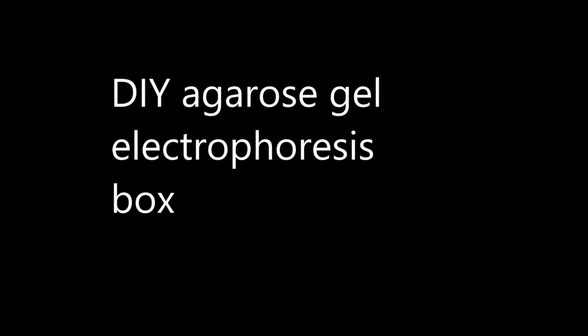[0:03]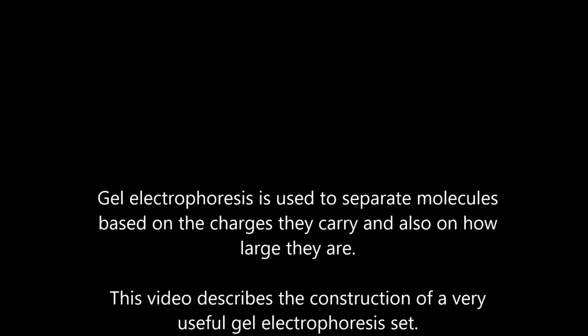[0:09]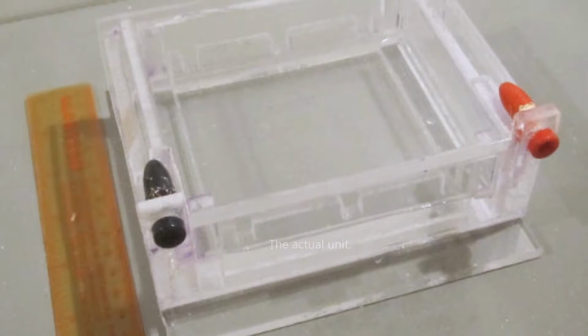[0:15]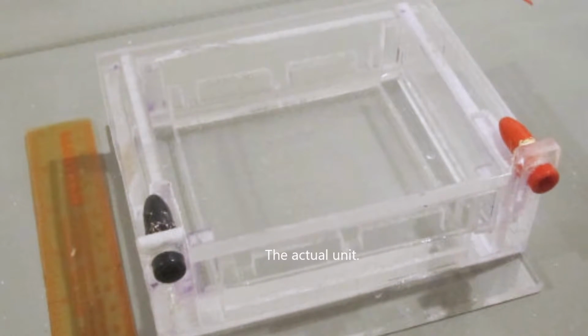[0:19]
Hi, this is a short video on how to make your own gel electrophoresis unit. Gel electrophoresis, as some of you know, is pretty useful for separating molecules based on charge: DNA, RNA, proteins, used a lot. So I'm going to describe the different steps to make your own. This is the unit I made, pretty close to professional quality, so I'm genuinely happy at how it turned out.
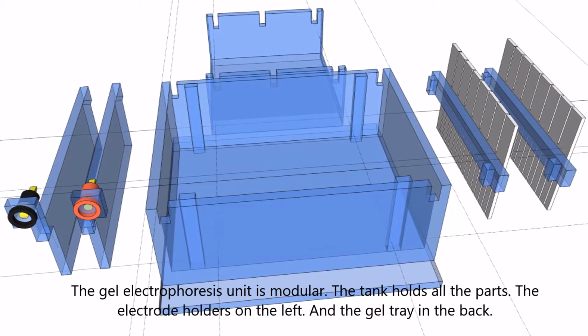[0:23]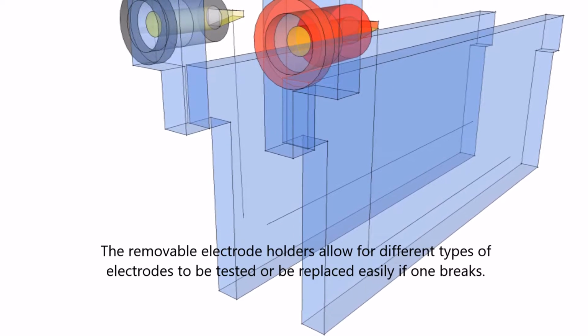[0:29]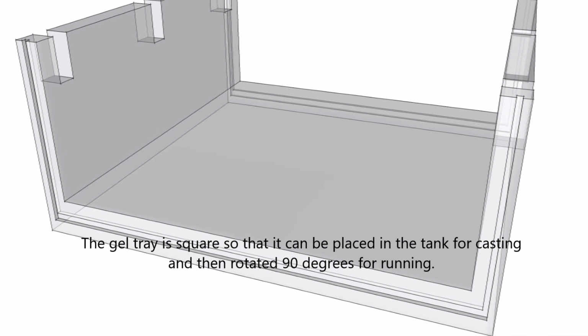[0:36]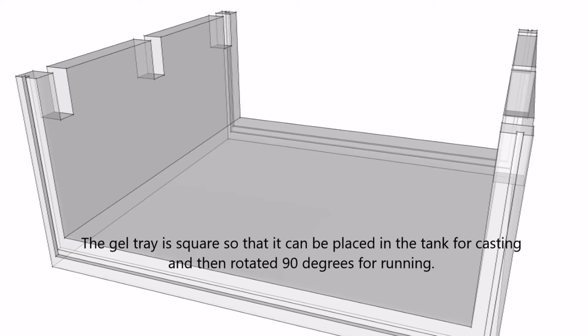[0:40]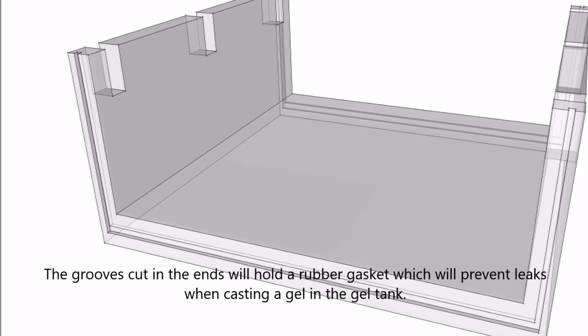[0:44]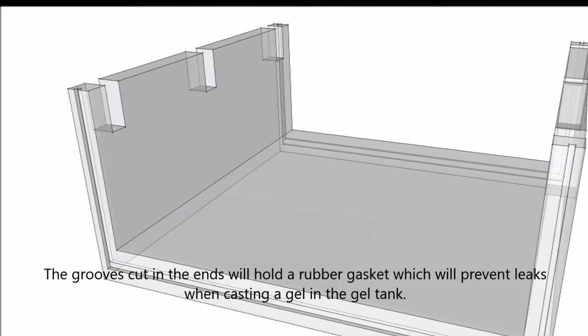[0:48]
In SketchUp, I drew the parts, starting from the right: gel combs, then in the middle is the tank, and on the left are the electrode holders. The electrode holders are like plastic plates, removable ones, so you can change the electrodes if you have a shortage of some materials. The gel tray is where the gel will be held, through which the molecules will pass under current. You can see grooves cut in the end, so that'll hold a gasket, and the gel tray fits both ways inside the holder, so you can cast your gel.
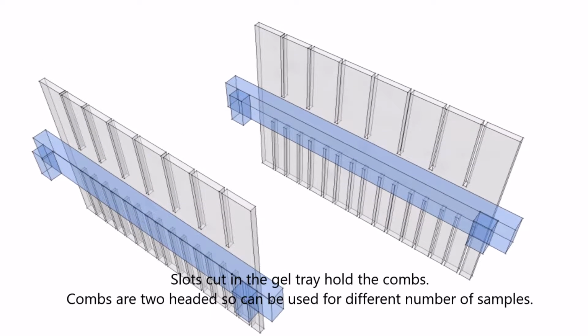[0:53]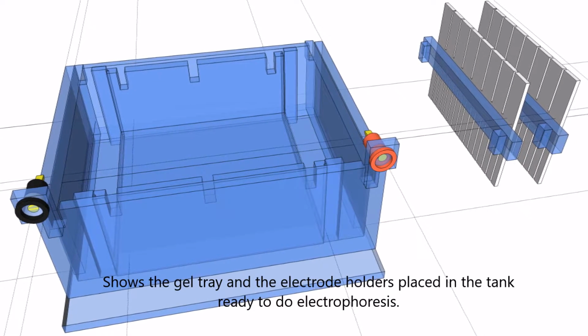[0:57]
When you cast your gel, you put combs inside, so these are two-headed combs. You can have different sample sizes. Here is the assembly with the gel tray and the electrode holders, and you'd be filling it with buffer and running it. So let's start with the gel tray.
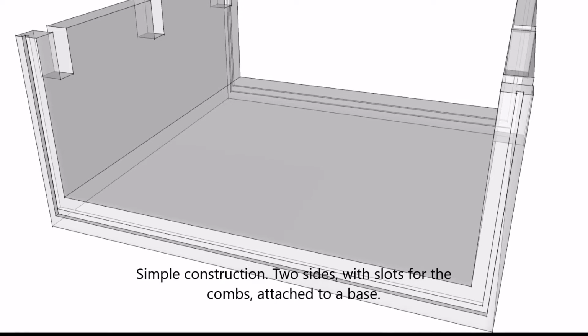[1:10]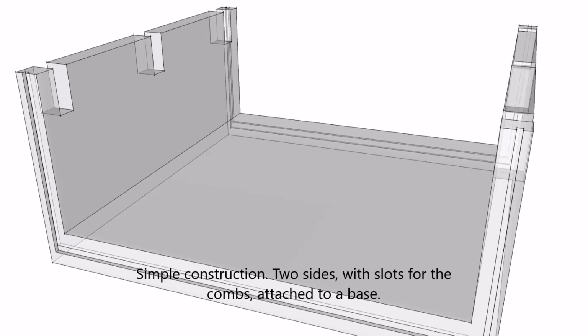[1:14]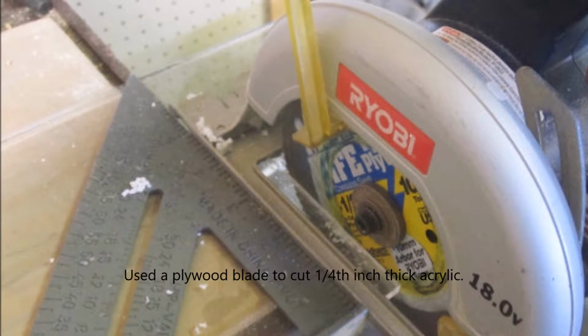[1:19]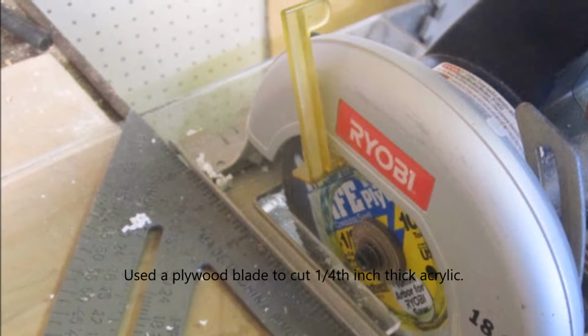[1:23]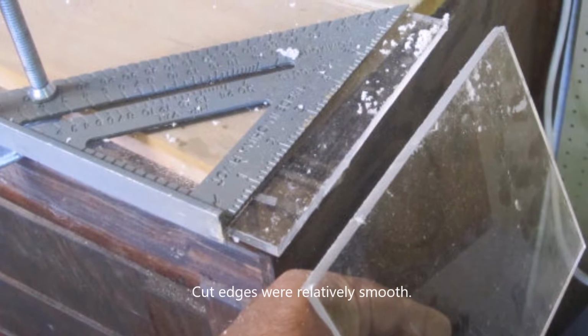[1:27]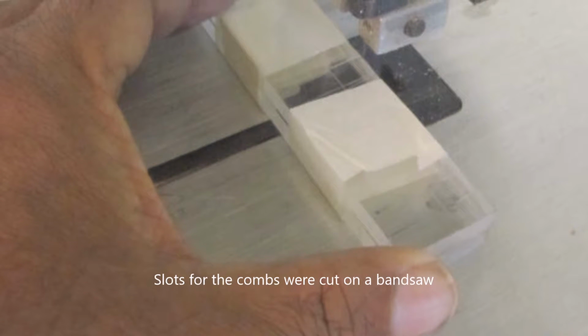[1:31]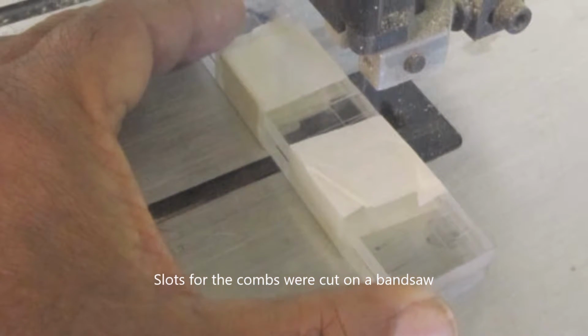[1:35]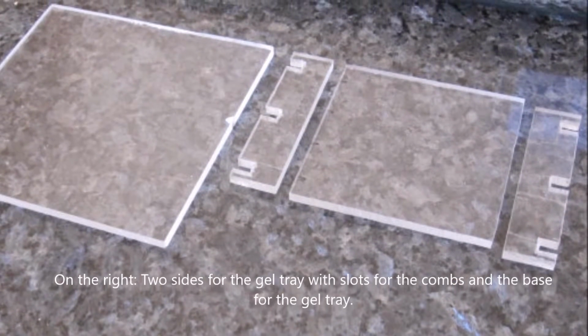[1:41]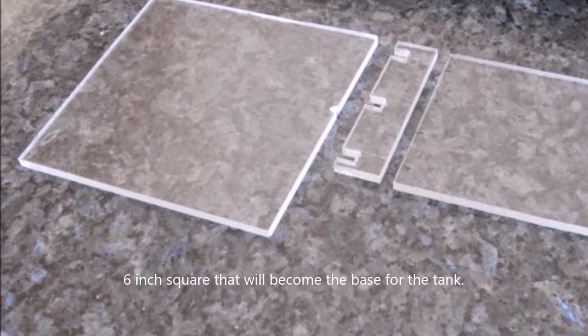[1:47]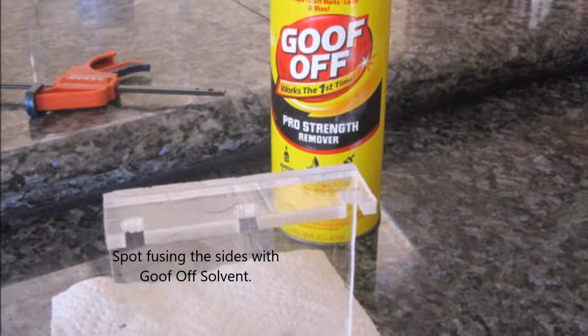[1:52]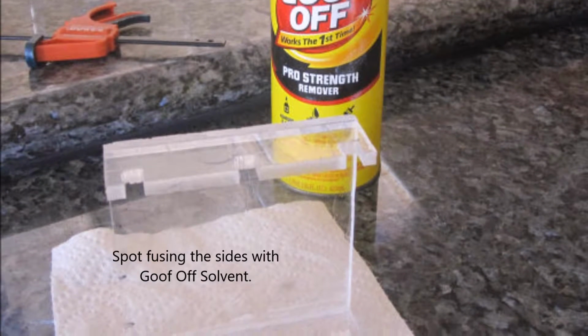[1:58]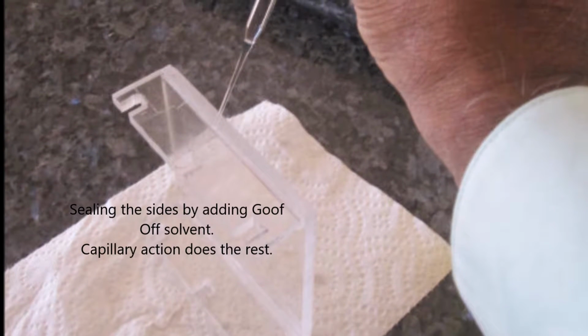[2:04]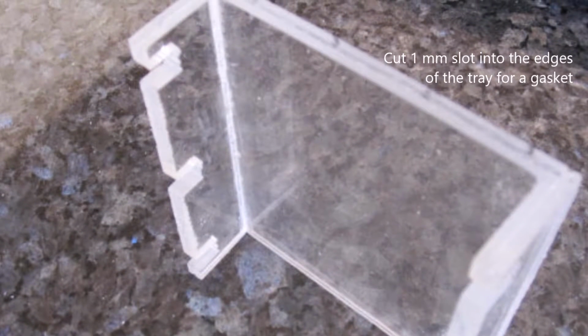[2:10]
So on the right, you can see the pieces cut for a gel tray. These are, again, very simple. On the left is a 6-inch square, which will form the base of the whole electrophoresis unit. Surprisingly, this Goof Off stuff I bought from Harbor Freight acts as a pretty good glue slash fusing agent. I first put little drops to hold the pieces temporarily together and then fill the capillary gap with more solvent, and it worked very well. Here, it's hard to see, but you can see a slot cut on the edge of the plastic which will hold the gasket.
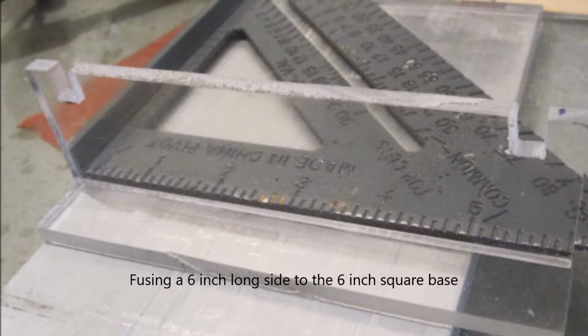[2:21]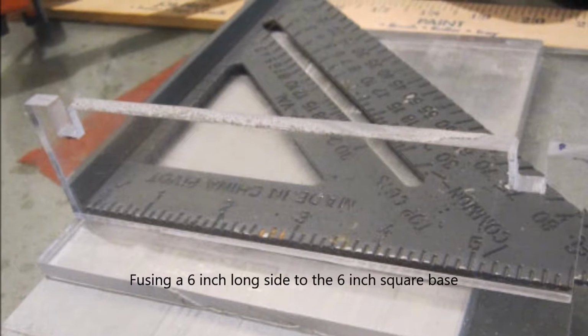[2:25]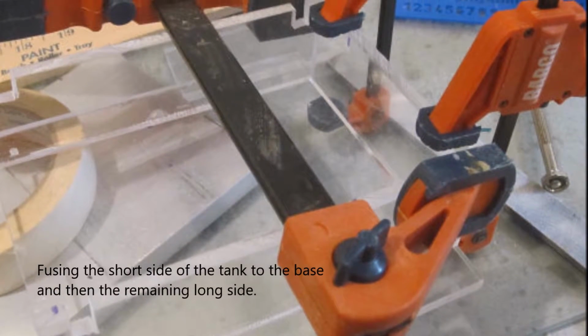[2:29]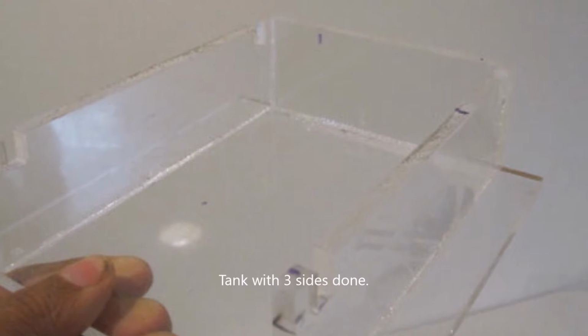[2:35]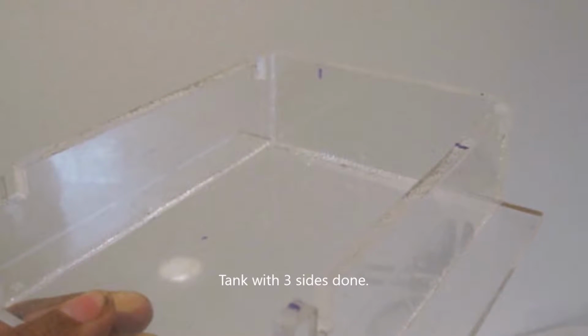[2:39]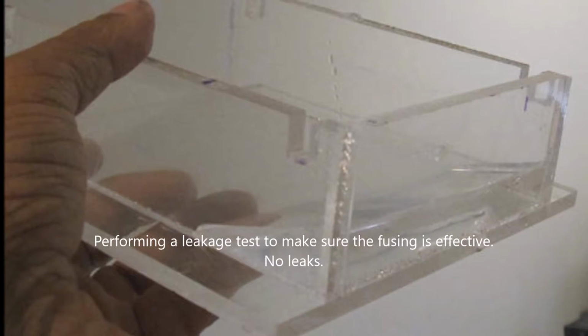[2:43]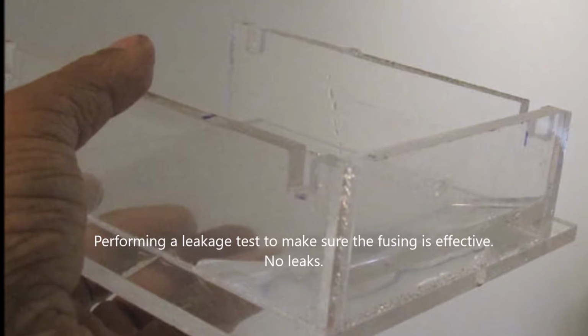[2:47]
So the next step is making the electrophoresis tank that holds everything together. This was again made from vertical acrylic pieces that rest on that horizontal 6-inch square that I showed you before. Two sides were glued together, then one cross side was put on that would hold the two sides together. So this is the tank with three sides. And you never know whether you have a leak or not, right? So I filled it with water to make sure nothing leaked. Seemed okay. I was pretty happy with that.
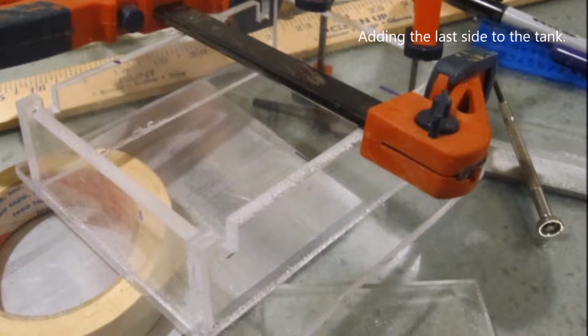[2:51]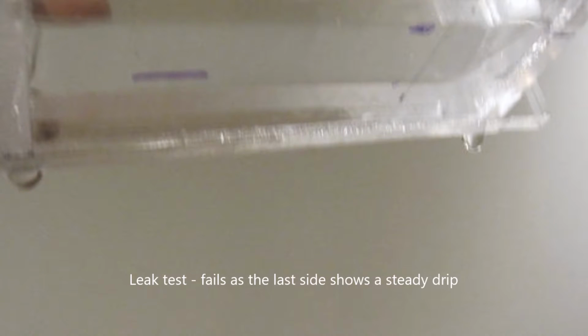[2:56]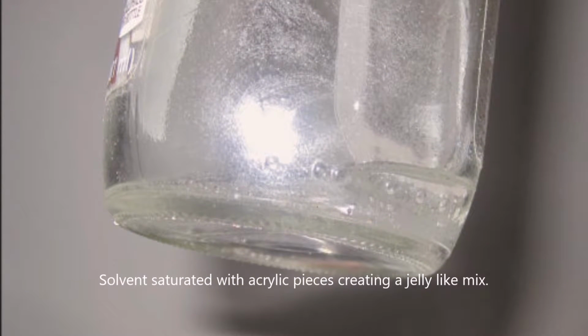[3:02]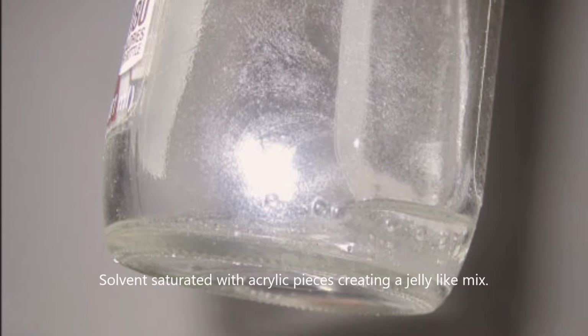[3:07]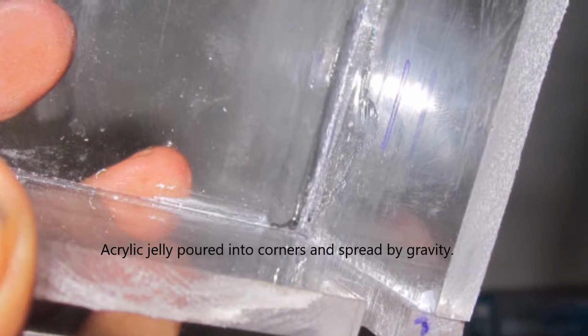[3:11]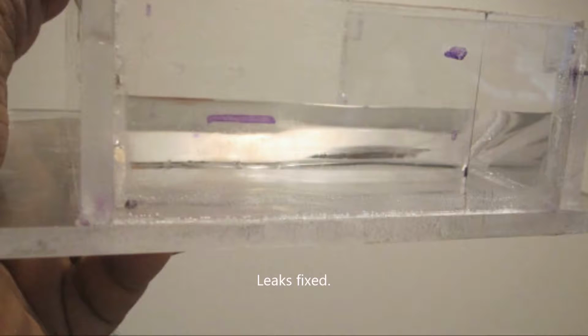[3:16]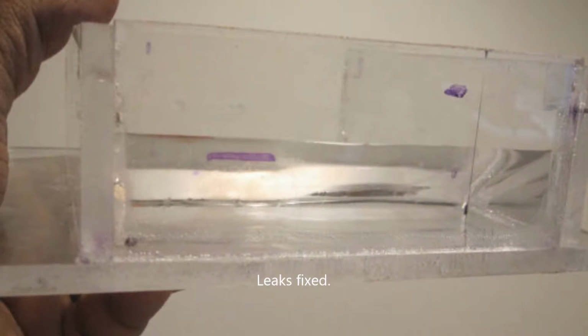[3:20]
Then I put the fourth side on. It was slightly small, maybe by 0.5 mm or so, so I was a bit concerned. And yes, when I did the leak test, it did leak. There were droplets coming off over time. So what I did was pretty nice. I took that Goof Off solvent and put scrap pieces of acrylic in it, so it formed this gooey mass. I put this acrylic jelly into the insides, and it just filled in whatever holes or gaps there might be. So the leaks were fixed. That worked out quite well.
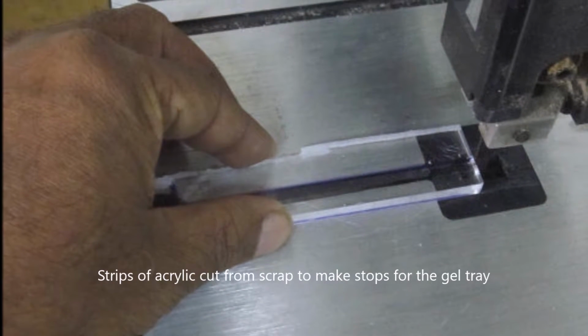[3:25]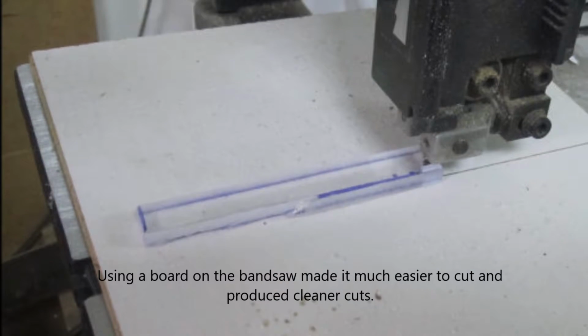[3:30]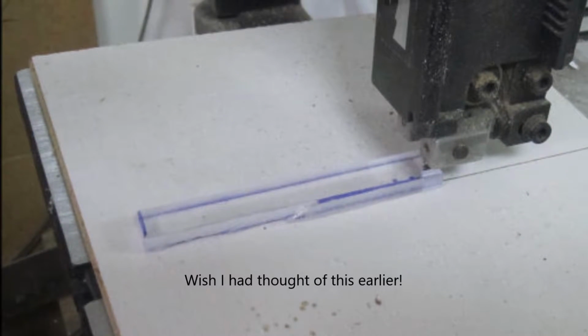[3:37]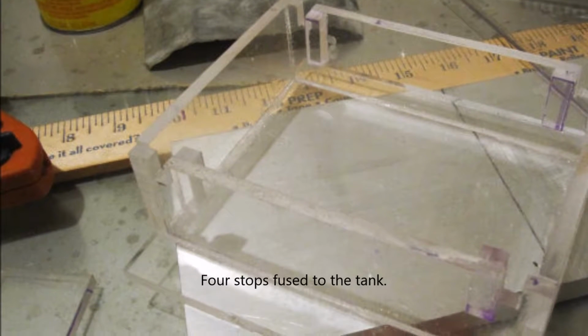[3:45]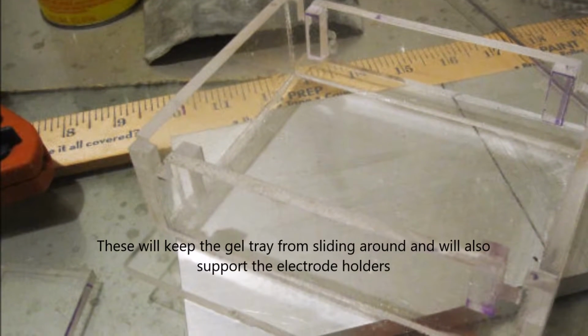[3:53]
And then the gel tray was sliding inside the gel box. I put little vertical plastic scraps that would prevent the gel tray from sliding around. So in the next image, you'll see what that looks like. Again, I used Goof Off to glue the plastics together. So here you can see the vertical pieces that are right there that hold the gel tray and also support the electrode holders, which you'll see, I think, in the next step.
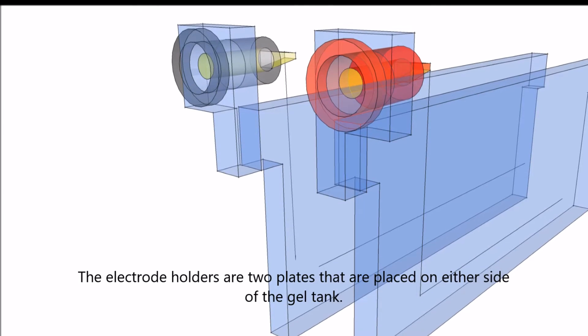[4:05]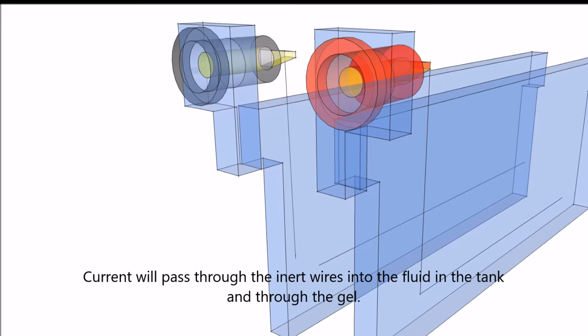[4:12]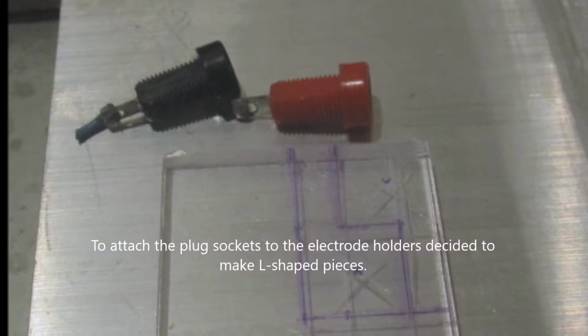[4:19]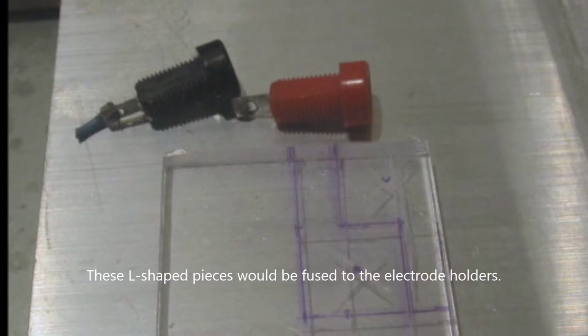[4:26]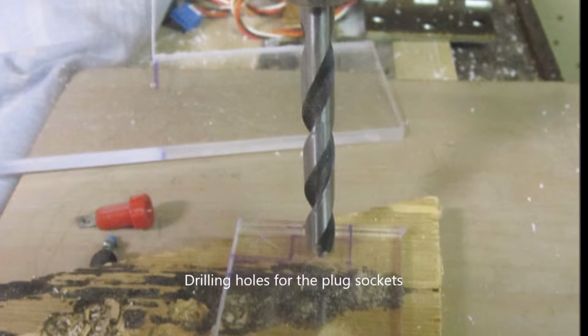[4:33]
So now I'm making the electrode holders, and here I cut two essentially slabs of acrylic, which were the width of the tray. That's around 4 inches. And to this I would be attaching plug holders that would hold the electrical plugs, and of course the wire that would pass the current into the thing. I had these two plugs in my scraps, so I just decided to use them. And I cut L-shaped pieces from the scrap piece of acrylic that I would connect to the electrode holder.
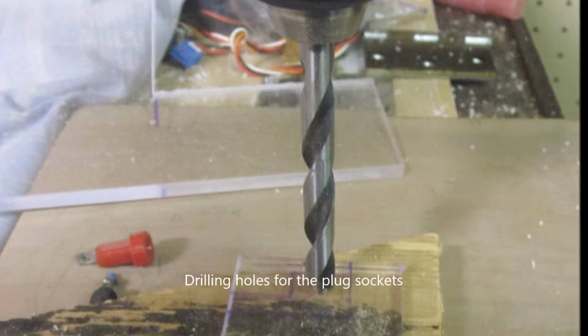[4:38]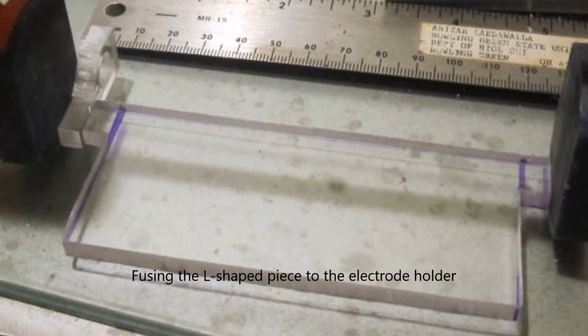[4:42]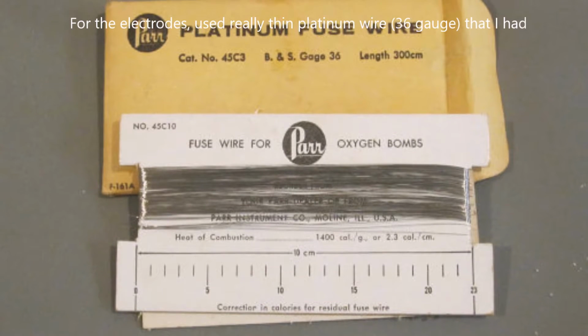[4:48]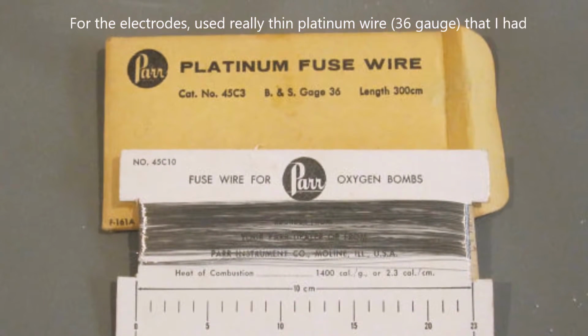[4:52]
So I drilled holes for the plug sockets on my drill press, and then I glued it onto the electrode holder, which I'd obviously cut on my circular saw and bandsaw. I had this platinum wire for quite a while. It's 36 gauge. It's pretty thin, almost thin like hair.
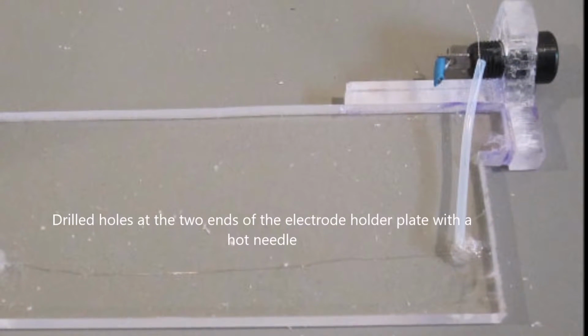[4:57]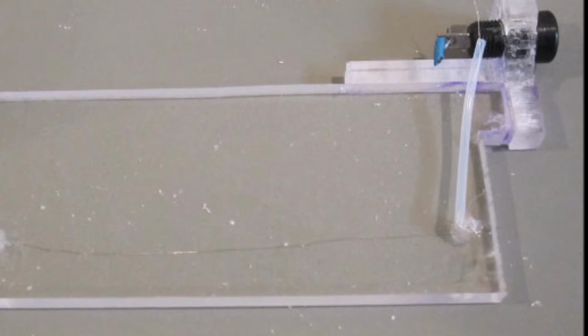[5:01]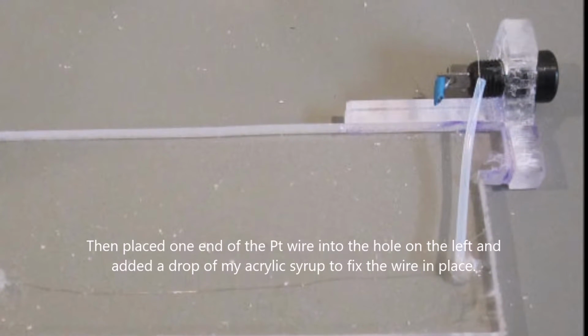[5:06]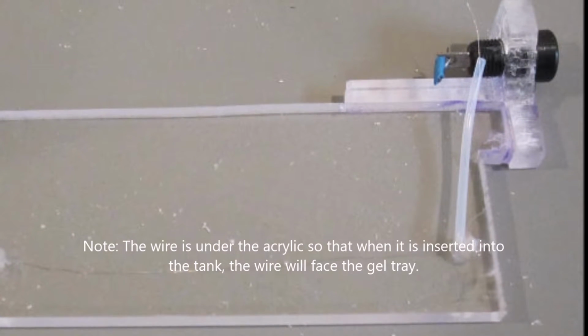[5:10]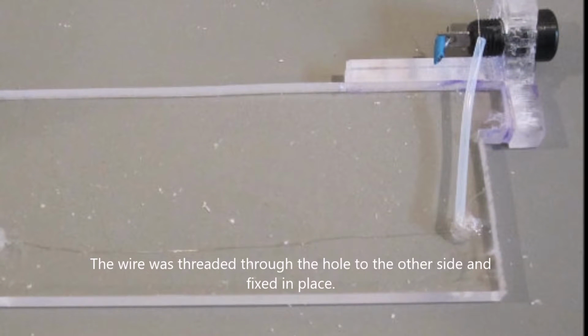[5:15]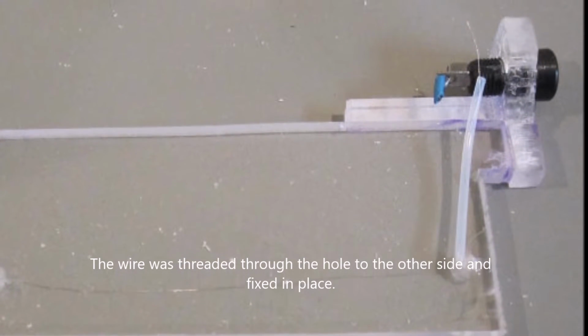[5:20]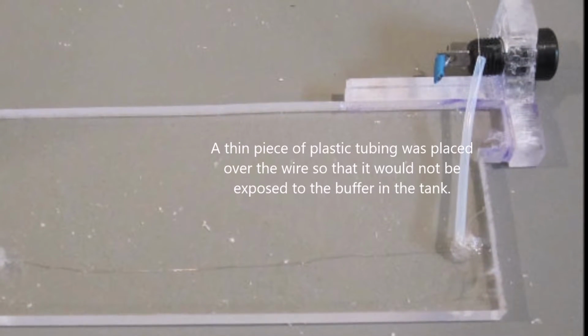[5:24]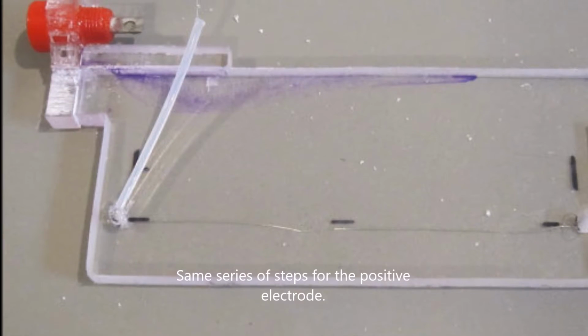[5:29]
So I drilled holes in the plastic with a hot needle and then threaded the wire in from one end to the other. And then at the other end, close to the plug, I threaded the wire through the hole and attached a piece of plastic tubing, which would prevent the electric current being carried into the electrode from the vertical wire. And then I would be connecting the platinum wire to the plug socket with solder.
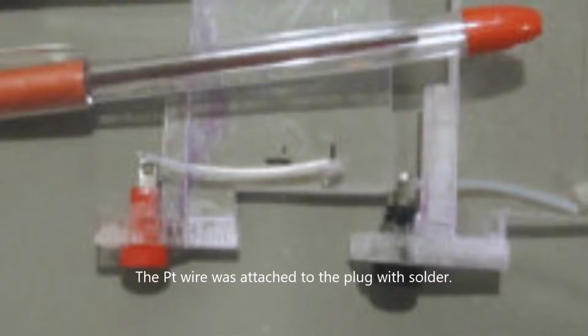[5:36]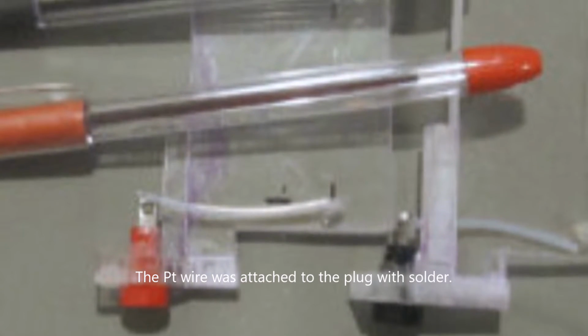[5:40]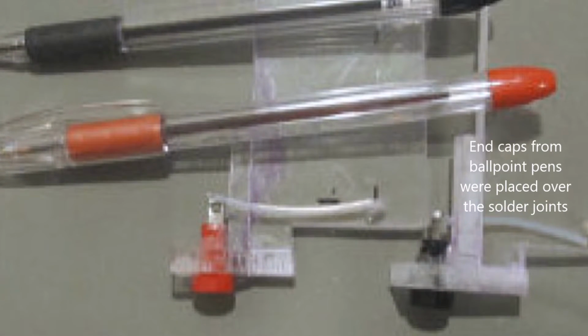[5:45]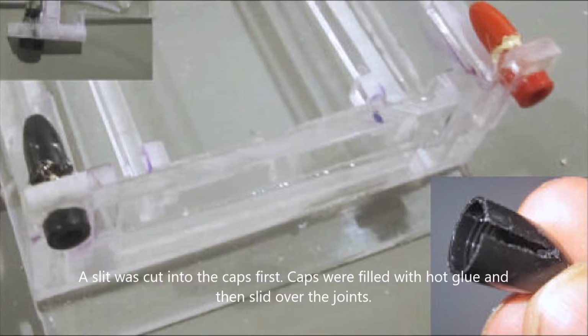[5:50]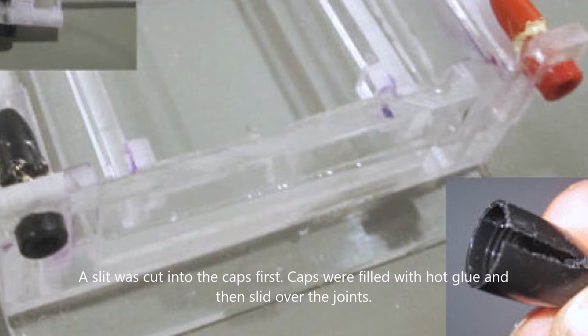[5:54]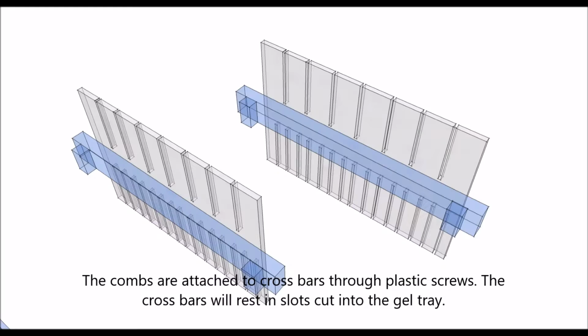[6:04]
I obviously did the same steps, and the holes where the wire passes, I put my acrylic goo that would kind of keep it in place. So I soldered it. I'm not sure whether solder actually connects to platinum, but at least it's a physical connection. And then the exposed electricals I covered with the ends of ballpoint pens. You can see it on the right. I cut a slot in those and then filled it with hot glue and just kind of pressed it over the exposed electrode areas.
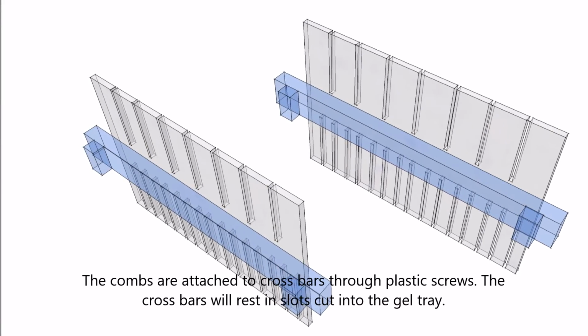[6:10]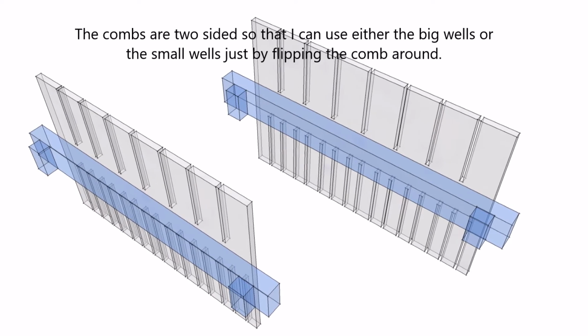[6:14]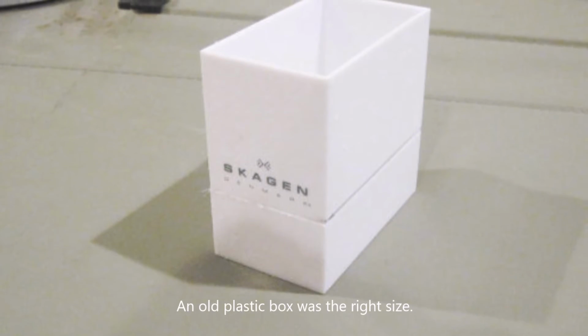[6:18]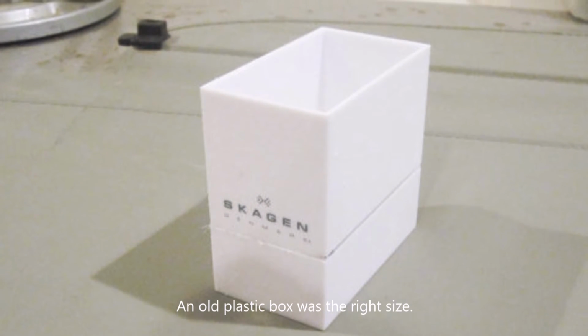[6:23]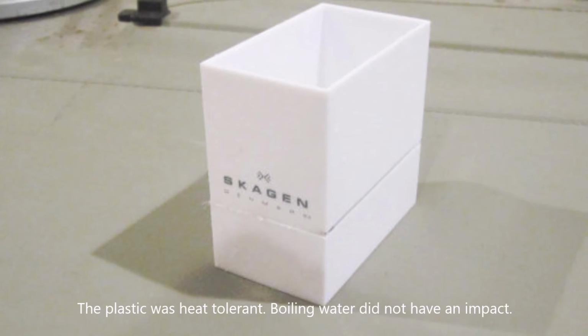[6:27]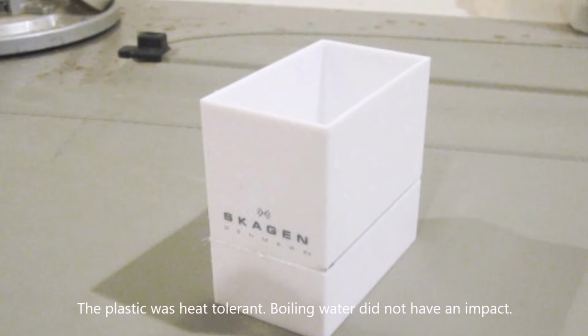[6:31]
Next step was making the gel combs. So these are held in the gel tray with an acrylic cross piece. And then there are two sets of combs in one thing. So you can either use big sample wells or small sample wells, depending on how many samples you have, just by flipping it around. I was fortunate to have a plastic box which was approximately the right dimensions I was looking for. So I put this in the microwave with water and heated it. It survived quite well, so that was a big relief, as it would hopefully survive the hot agarose that I would pour in it.
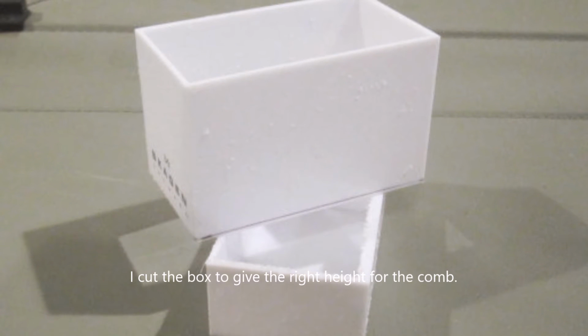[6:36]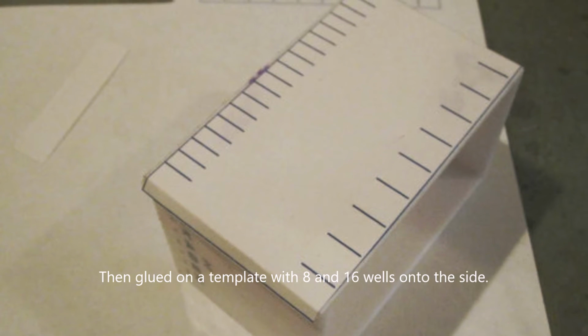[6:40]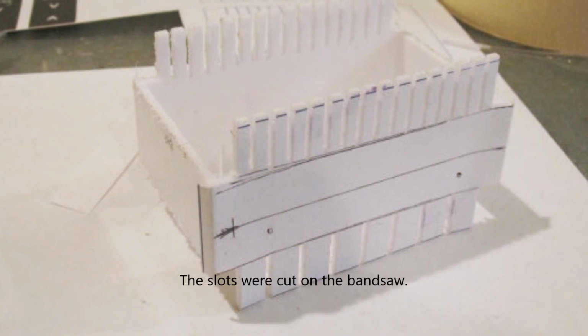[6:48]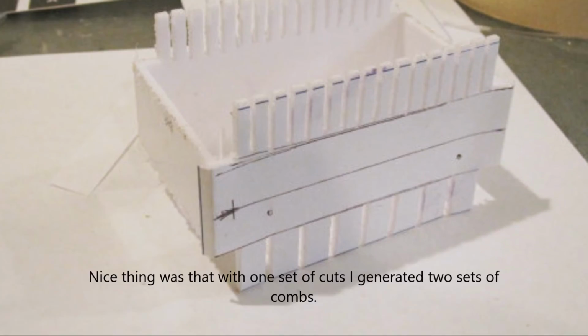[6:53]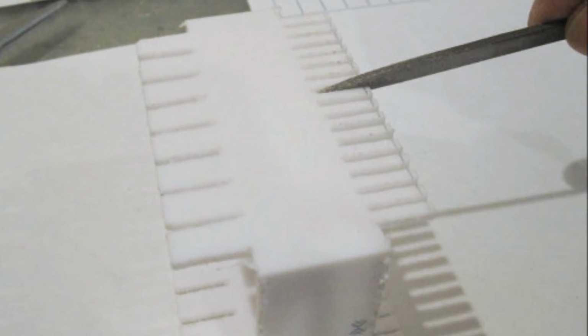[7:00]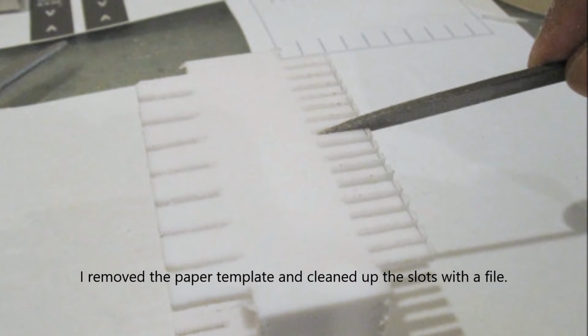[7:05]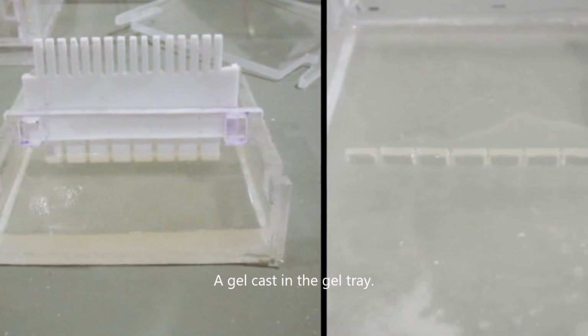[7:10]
I cut it on the bandsaw to the right vertical height. I drew a template of where the slots for the wells are, glued it onto the thing, and then cut the slots on the bandsaw. Nice thing is, because it was a box shape, in one cut I was essentially getting two slots done. So twice the efficiency. I then removed the paper and smoothed the rough edges from the saw with a file and a thin sandpaper. And then I did a cast gel.
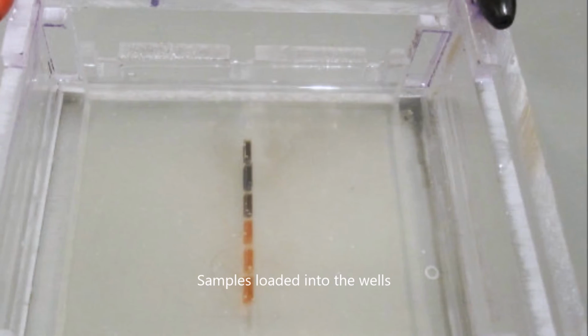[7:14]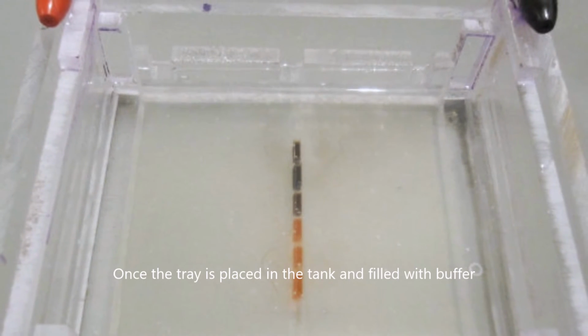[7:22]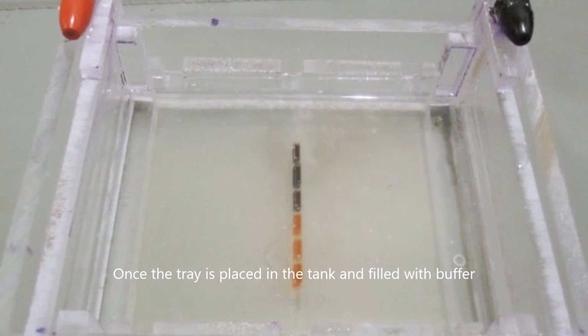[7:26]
By the way, the slots are held with a screw on the crossbeam. You cannot see it from this angle. This is a first gel made out of gelatin, not of agarose. I didn't have any at that time. Put dye in there, turned on the current, and yes, you're getting a pretty good separation. You can see the bubbles coming out on the right in that previous photograph.